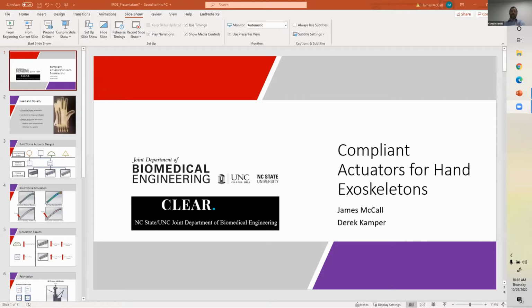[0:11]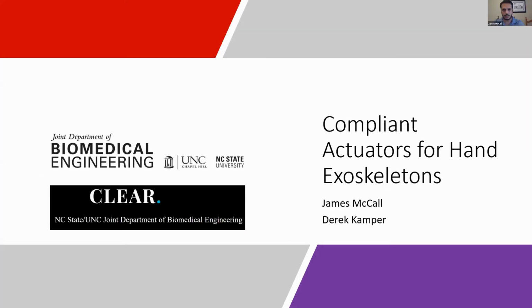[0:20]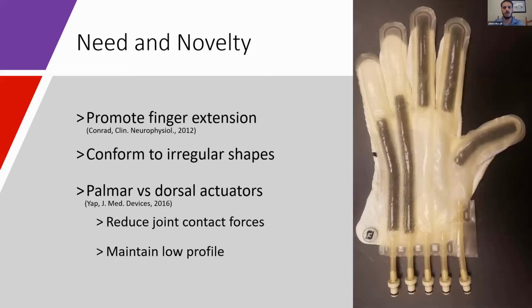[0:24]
All right. Hello, I'm James McCall, and I'm speaking on compliant actuators for hand exoskeletons. We are developing soft actuators for assisting in finger extension in hand exoskeletons. We're focused on finger extension because many neurological patient populations are able to flex their fingers but have difficulty with extension. Soft actuators are desirable for this application due to their high compliance and low weight.
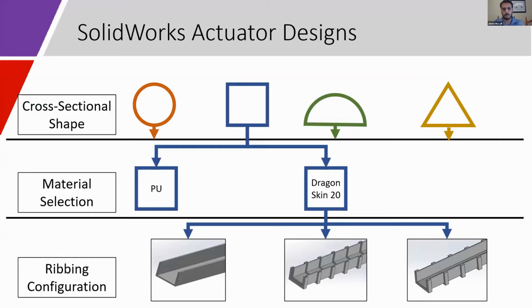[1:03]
Unlike other exoskeletons, our actuators are placed on the palmar side of the hand to reduce joint contact force and maintain a low profile. This palmar placement increases the need for very high compliance and low passive bending force. This image shows a previous prototype with actuators made of polyurethane. This prototype has some difficulties with chamber kinking during flexion and manufacturability, which is why we're developing elastomer-based actuators now.
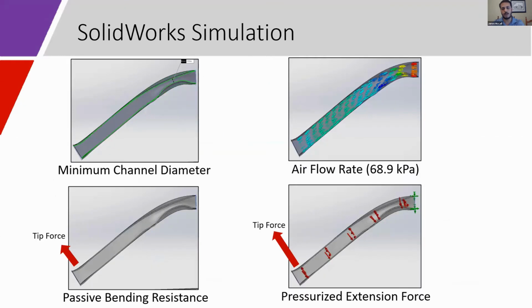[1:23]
SolidWorks simulations were performed for 24 actuator designs, created from a combination of 4 cross-sectional shapes, 2 materials, polyurethane or Dragon Skin 20 elastomer, and 3 different ribbing configurations: no ribbing, hollow ribbing, and solid ribbing. The intention of the ribbing was to decrease actuator kinking during flexion, which might affect pressurization during use. Each actuator design was deflected to an angle of 30 degrees.
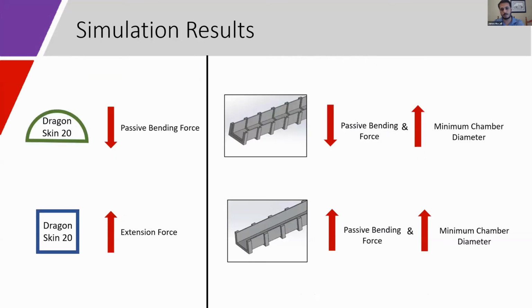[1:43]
The minimum chamber diameter and air flow rates were measured to determine if narrowing at the bending point would affect pressurization. And deflection force was measured to determine the passive bending resistance. Each design was then pressurized to 10 psi, and the extension force at the tip of the actuator was measured.
The rectangular and semicircular cross-sections gave the highest tip extension forces and lowest passive bending resistance compared to the other cross-sectional shapes. And the actuators made of Dragon Skin 20 had a tip extension force about 30% higher than those made from polyurethane. It was determined that hollow ribbing successfully decreased narrowing of the actuator channel during bending and decreased passive bending resistance. However, it also decreased flow rate by almost 50%.
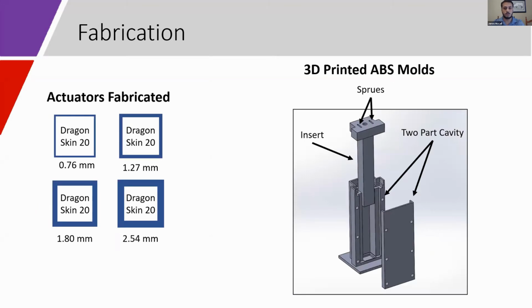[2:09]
Based on the simulation results, we fabricated 4 Dragon Skin 20 rectangular actuators of different wall thicknesses using 3D printed mold components. The primary blind tube of the actuator was formed in a 2-part cavity with an insert. This assembly of the cavity in 2 parts allowed for easier demolding of the especially thin actuators, and the addition of sprue holes at the top of the insert allowed for extrusion of excess elastomer during insertion into the cavity.
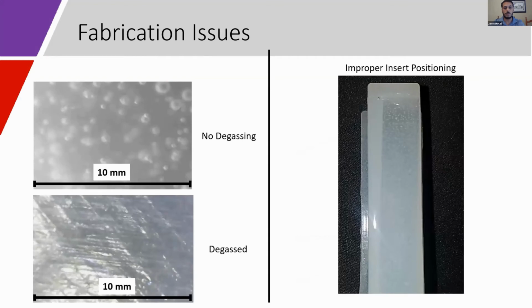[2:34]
For these initial actuators, we were unable to degas our elastomer mixture prior to molding the actuators, which caused bubbles to be present in the material. The top left image shows a typical section of cured elastomer with no degassing. The bottom left image shows elastomer which was degassed prior to curing and from which bubbles are completely absent. The bubbles commonly reach diameters of approximately 1 millimeter.
They do not appear to affect the function of the thicker walled actuators. The 2 thinner walled actuators did develop pin leaks during testing. Another fabrication issue was inconsistent chamber wall thicknesses due to improper insert positioning. You can see in the figure on the right, as you go along the length of the actuator, the left actuator wall increases in thickness and the right actuator wall decreases.
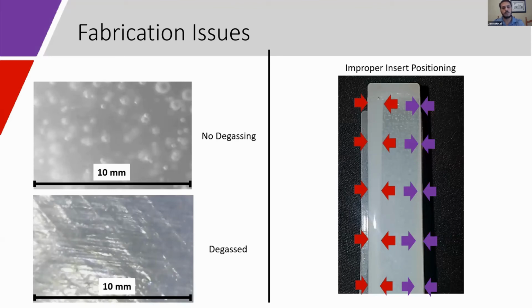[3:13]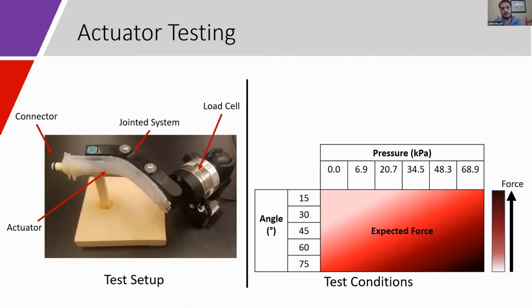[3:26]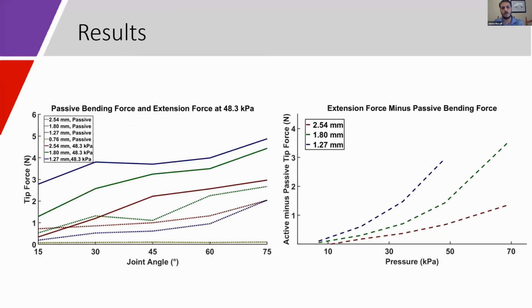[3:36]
This was due to improper positioning, which is caused by some issues with fabrication during 3D printing, or flexibility of the insert, and in other cases due to imperfect, non-obvious seating issues in the mold cavity. Actuators were tested by attaching them to a jointed fixture. The actuator tip was placed into contact with the load cell. Each actuator was then pressurized to several different pressures, positioned at joint angles of up to 75 degrees.
The figure on the left shows that the thinner walled actuators had lower passive bending resistance and also produced higher tip extension forces across the entire range of joint angles. The superior performance of the thin-walled actuators at producing extension forces at low pressures is highlighted in the figure on the right, which shows that the thicker walled actuators do not begin producing significant active extension force until about 35 kPa or higher.
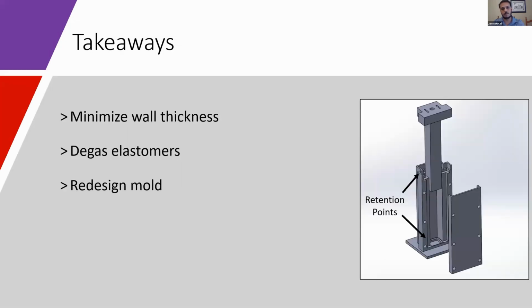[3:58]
Our results indicate that if we want to minimize passive bending resistance and maximize extension force, we should keep our actuator walls as thin as possible. And because bubbles in the elastomer impact the integrity of thin-walled actuators, degassing during the fabrication process will be necessary. If further reduction of passive bending force is necessary, then the SolidWorks simulations indicate that adding hollow ribbing may help. Additionally, because our mold design led to uneven wall thicknesses, mold insert retention features will be placed at the top and bottom of the cavity to secure the insert at both ends.
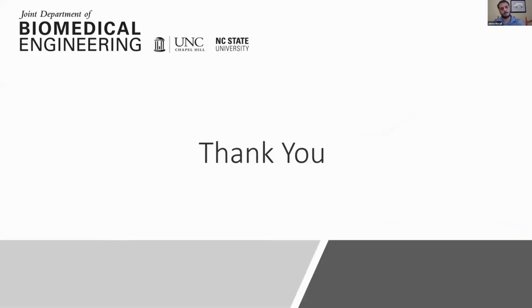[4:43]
Future testing will include testing the operational bandwidth of these actuators and the robustness of them, as these will be impacted by minimizing the wall thickness. Thank you.
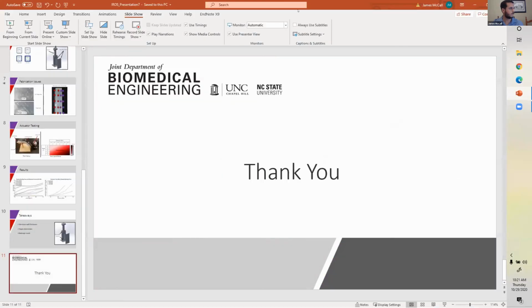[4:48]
Thanks, James. That was spot on time, 4.5 minutes. Thanks a lot. I give you a virtual applause as well from everyone.